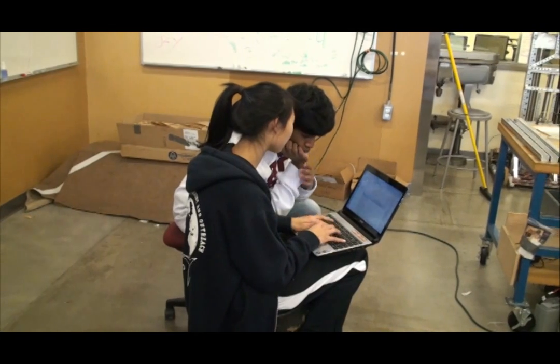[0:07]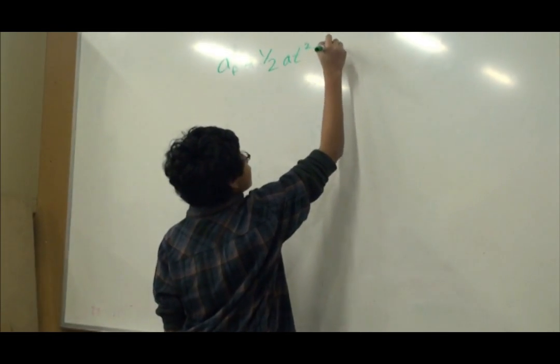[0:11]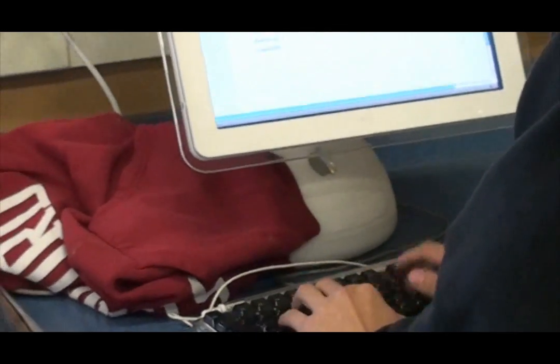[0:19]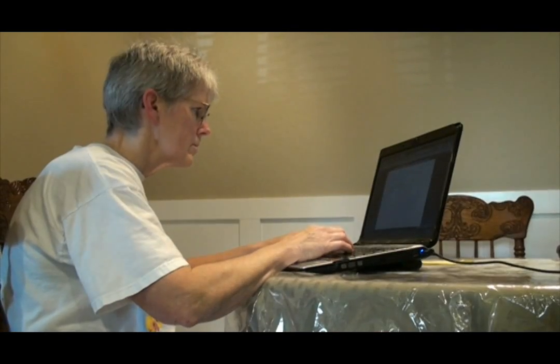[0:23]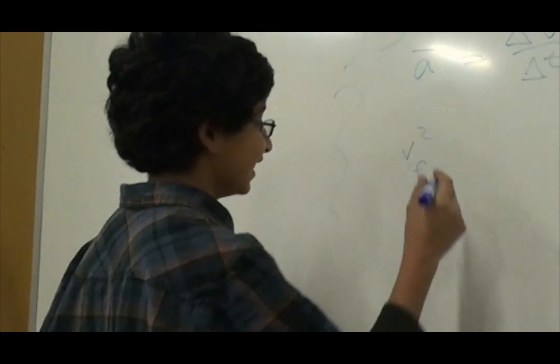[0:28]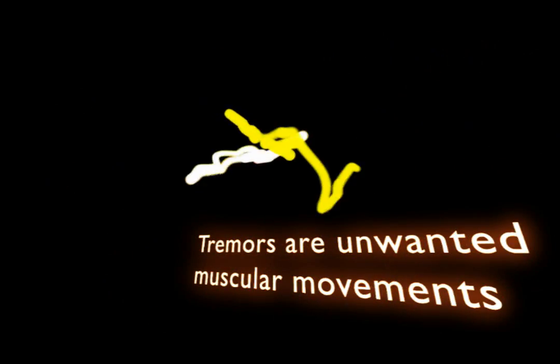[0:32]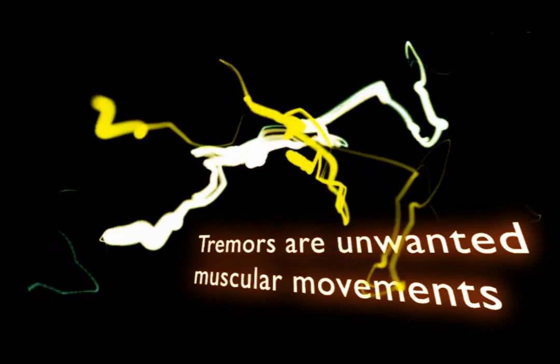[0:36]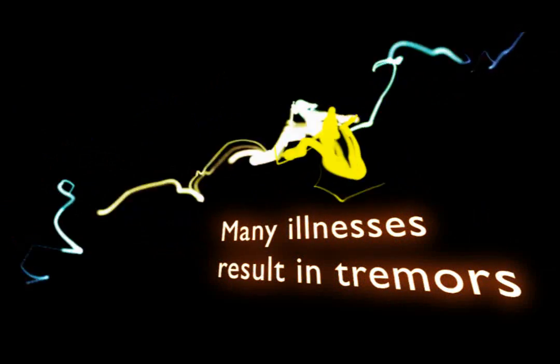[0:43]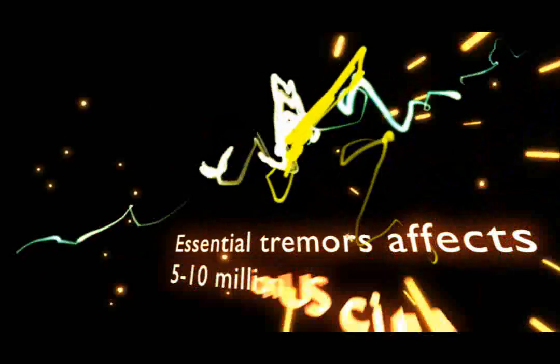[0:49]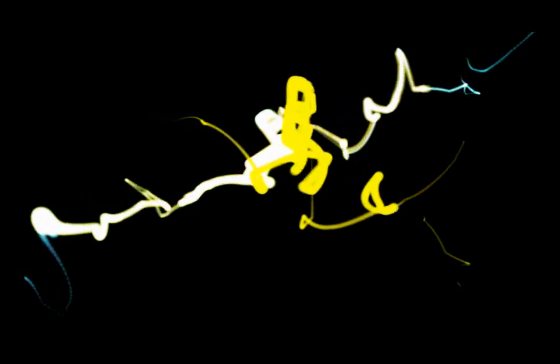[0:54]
A tremor is an unwanted movement or oscillation of one or more regions of the body attributed to neurological disorders or problems in the brain centers that control the movement of particular muscles. There are many illnesses that result in tremors, such as multiple sclerosis, Parkinson's disease, traumatic injury to the brain, and strokes. Essential tremor, which affects 5 to 10 million people in the U.S., is a progressive neurological disorder.
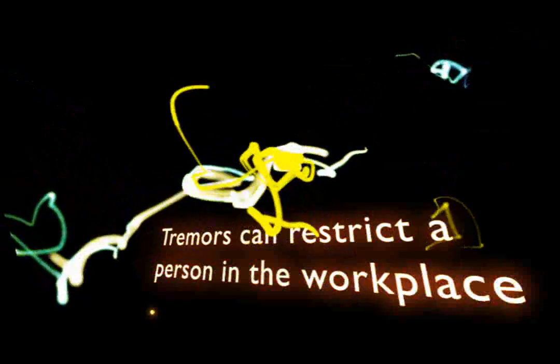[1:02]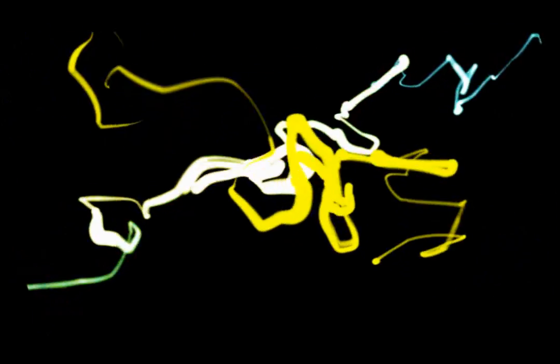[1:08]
Its most recognizable feature is a tremor of the arms, which is most apparent in voluntary movements, such as eating, writing, and typing. These actions are all necessary in an office environment. Tremors themselves aren't fatal, but can significantly restrict a person from doing the simplest of tasks in their workplace and in their daily lives.
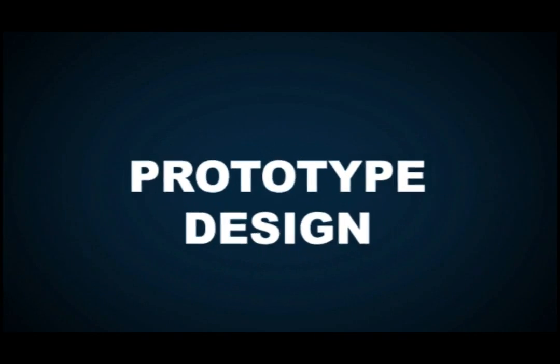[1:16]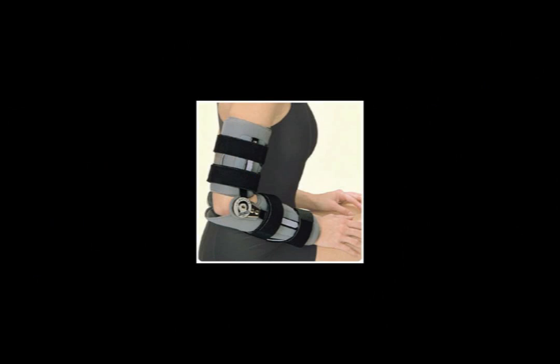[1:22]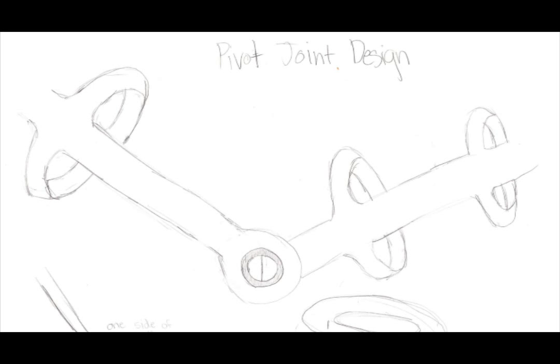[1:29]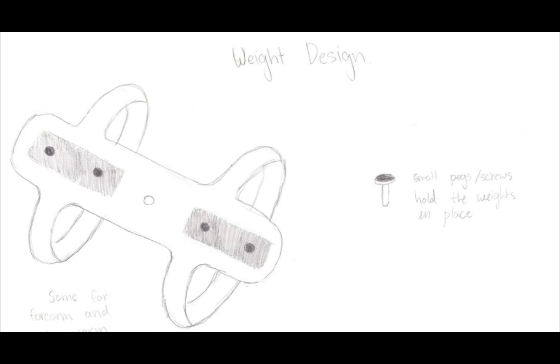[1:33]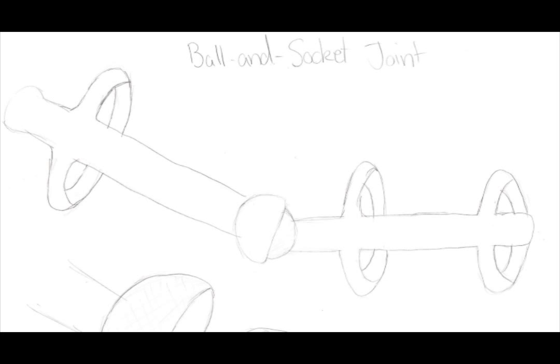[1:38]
To formulate a design for our device, we first researched the products already on the market and found many issues. Mainly, the current products severely limit movement and are too restrictive and cumbersome to prevent tremors. We sought to build an inexpensive device that would allow for adequate arm mobility and limit the effect of tremors by providing natural resistance to movement in order to stabilize the entire arm.
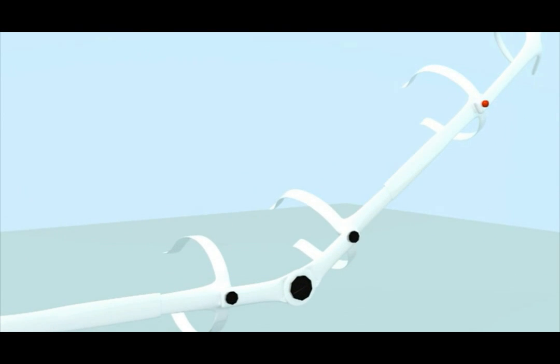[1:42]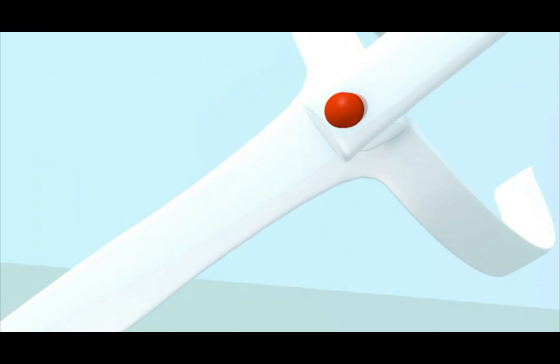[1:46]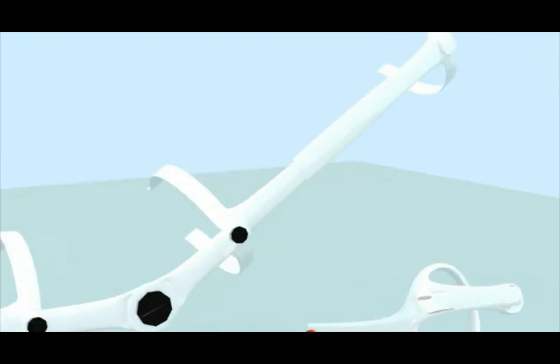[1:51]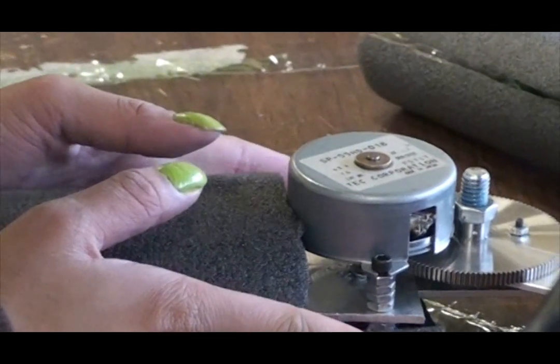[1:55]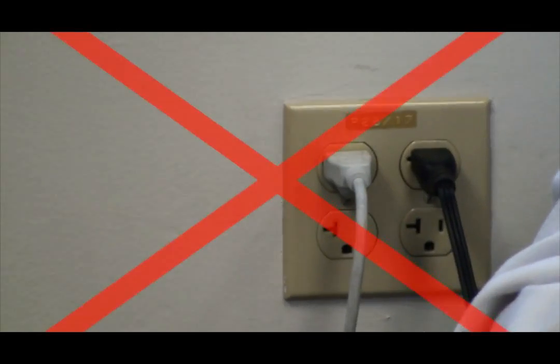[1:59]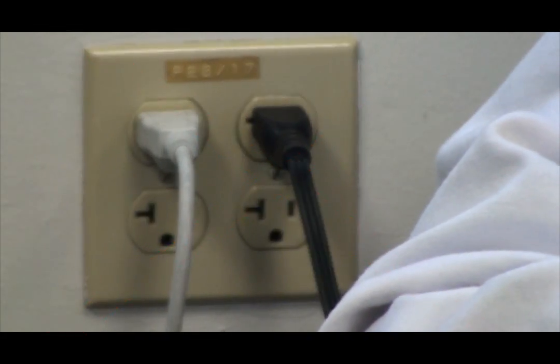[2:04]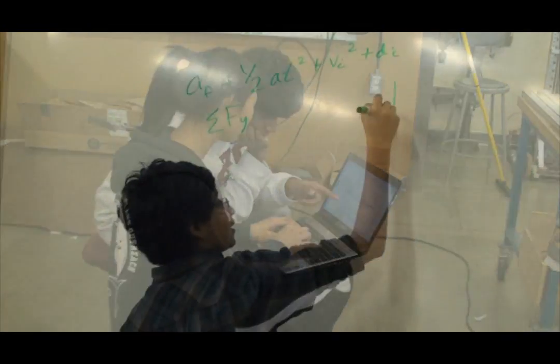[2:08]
Our final design features a back-driving motor attached at the elbow to provide a natural resistance. The motor rotates when the arm is in motion when accomplishing a certain task, such as typing or writing. The brace spans from the wrist to the shoulder. The entire device is foam padded for comfort and can be attached with the free hand using Velcro. The device requires no electricity, maximizing the usability and safety of the design. TRAB moderates the effects of tremors and significantly improves the user's ability to perform tasks that require fine motor control.
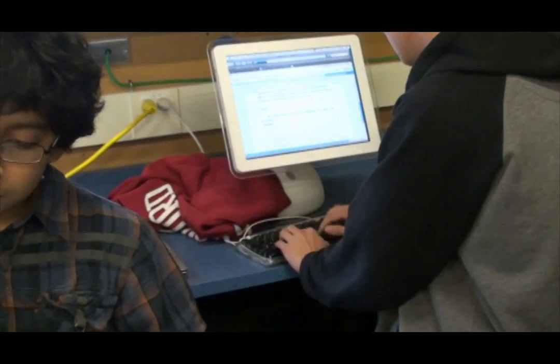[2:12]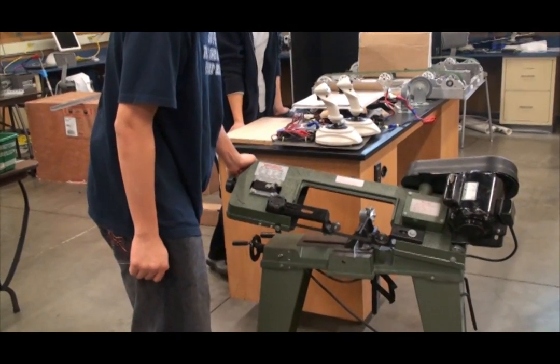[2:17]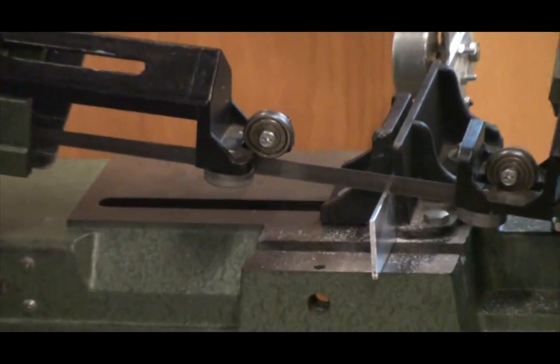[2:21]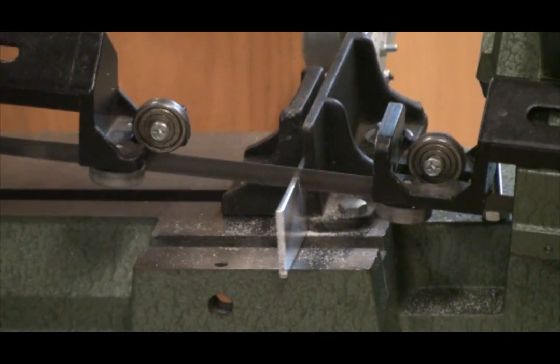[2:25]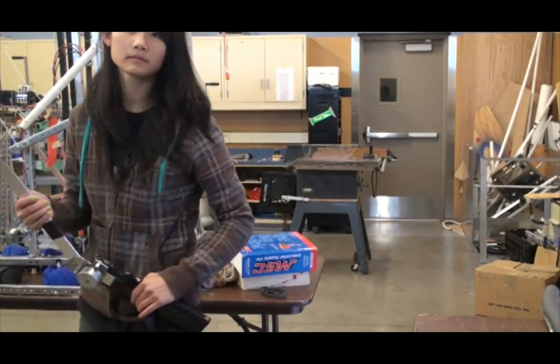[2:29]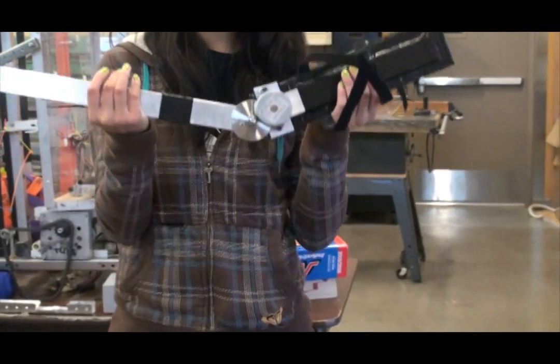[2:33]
The construction of our device was divided into 4 parts. To construct the arm brace, we first cut the aluminum strips into 2 sections. One of the sections was used for the upper arm, and the other part was used for the forearm. We connected the 2 parts via a step motor and 2 gears. We used screws and bolts in order to attach the step motor and gears to the 2 separate pieces of aluminum. This formed the basic skeleton of the device.
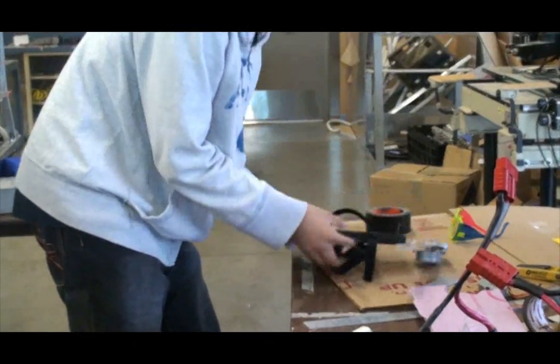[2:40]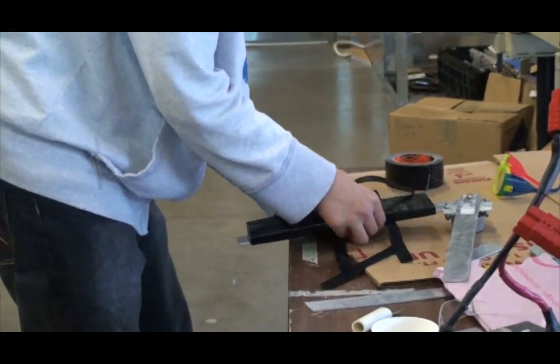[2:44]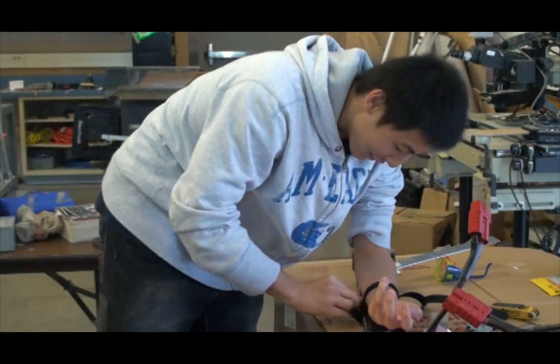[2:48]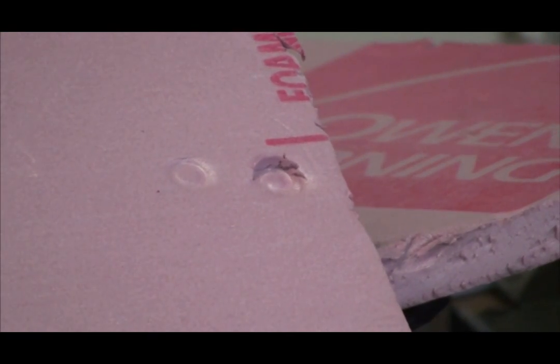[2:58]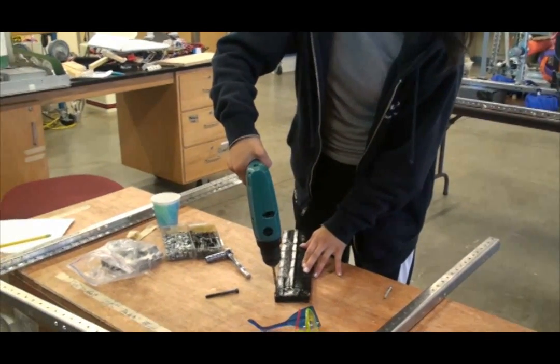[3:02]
Then, Velcro was attached onto both the upper and lower arm. This allowed the braces to be attached to the person's arm. The Velcro was attached with adhesive material and was adjustable in order to provide the greatest amount of comfort. A set of pads was attached to each piece of aluminum in both the upper and lower parts of the brace via screws as well as adhesive material to provide comfort as well as stability to the arm.
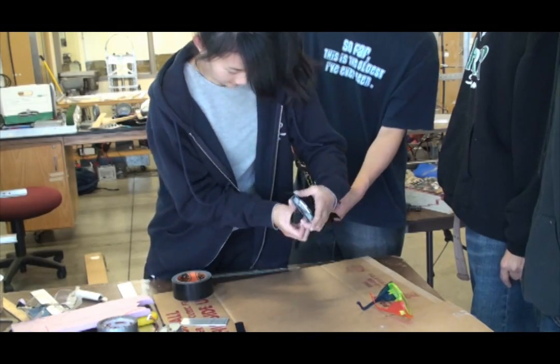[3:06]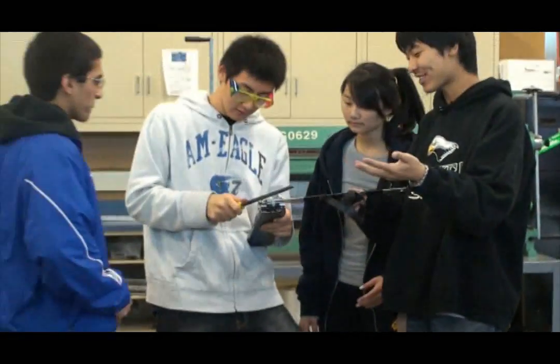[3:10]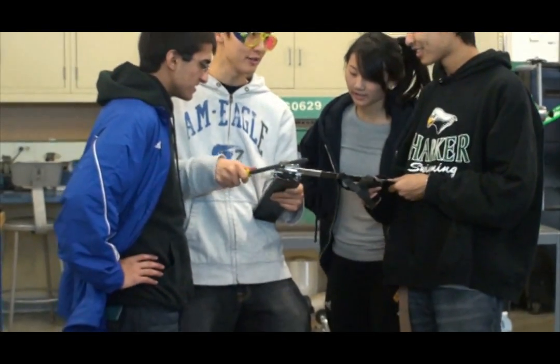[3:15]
Finally, the arms of aluminum and the step motor were adjusted so the right amount of resistance was provided. The bolts were loosened slightly in order to allow for the device to rotate successfully. This was the final step in the construction of the device.
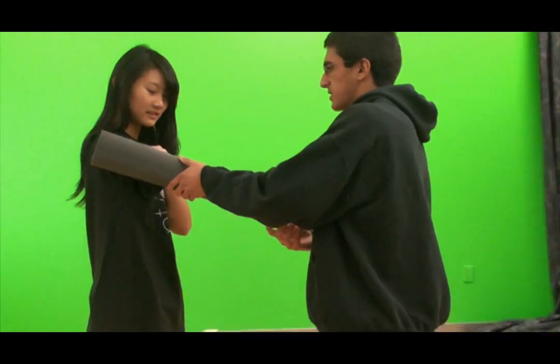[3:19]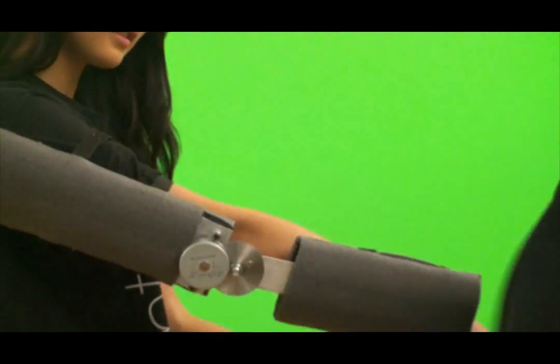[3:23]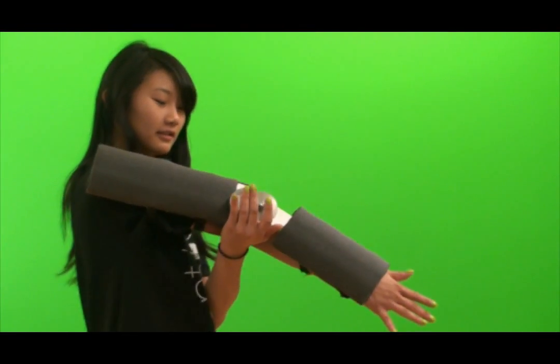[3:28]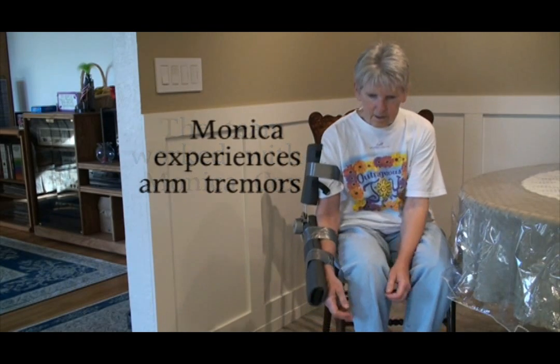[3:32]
To ensure the functionality of our device, we performed various tests. First, we tested the comfort and usability of the device by trying it on various team members. The device moved with ease and provided ample resistance to movement. It was easily adaptable to members with different arm sizes and muscle power.
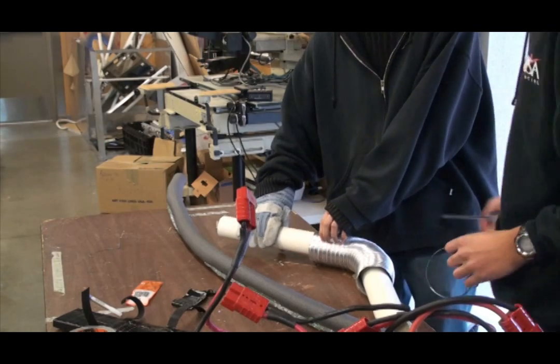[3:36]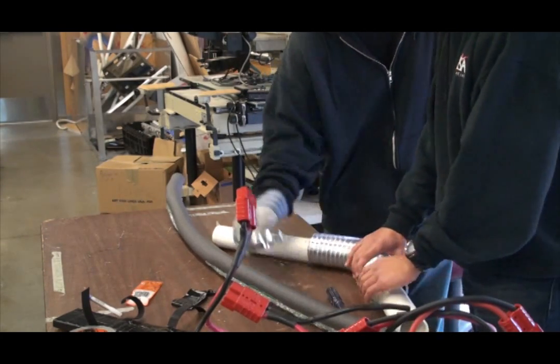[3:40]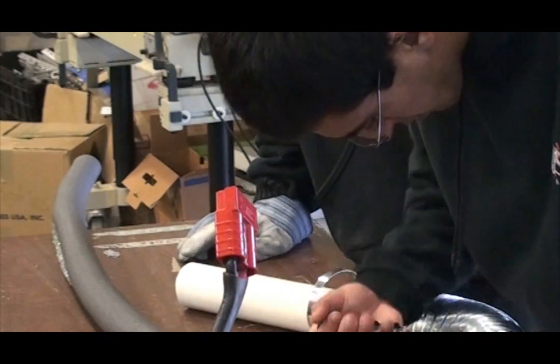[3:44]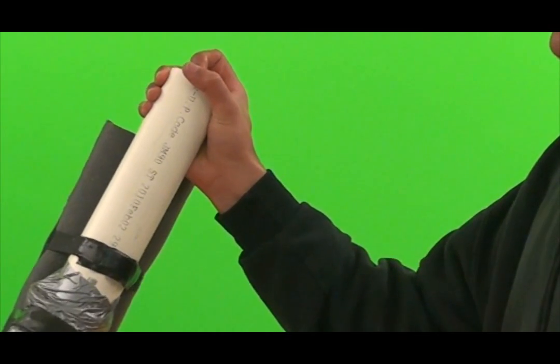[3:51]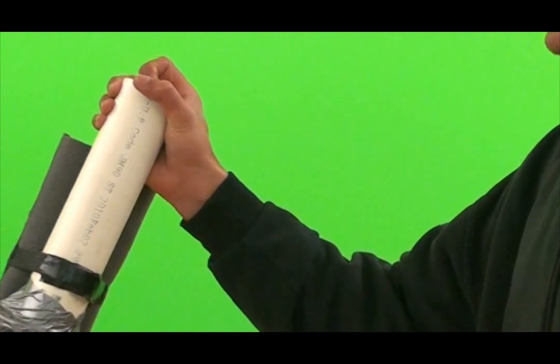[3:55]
The second test sought to determine whether the device limited the effect of unwanted arm movement in an objective arm model. To ensure precise and systematic testing, an arm was constructed out of aluminum tubing and PVC piping. We attached the device to the makeshift arm and systematically oscillated the upper and lower parts of the arm to simulate tremors. The resistance of the brace was measured using video analysis.
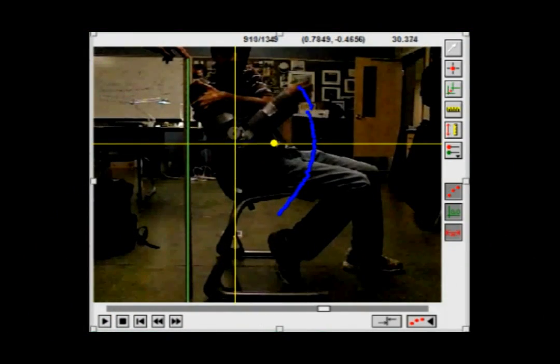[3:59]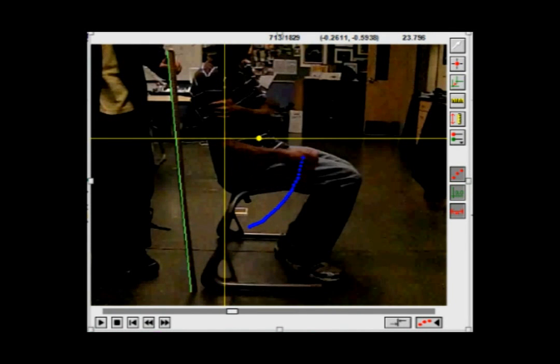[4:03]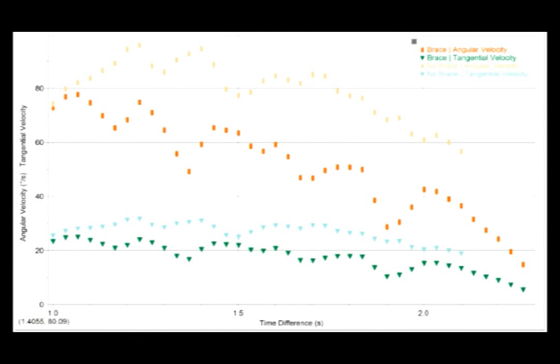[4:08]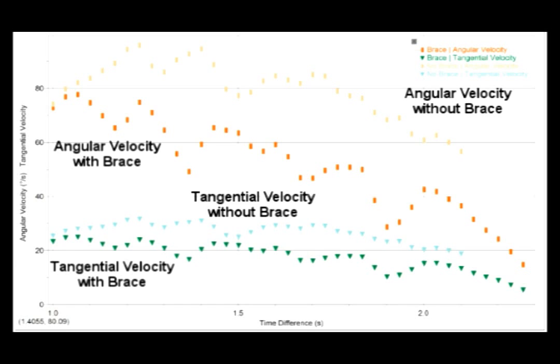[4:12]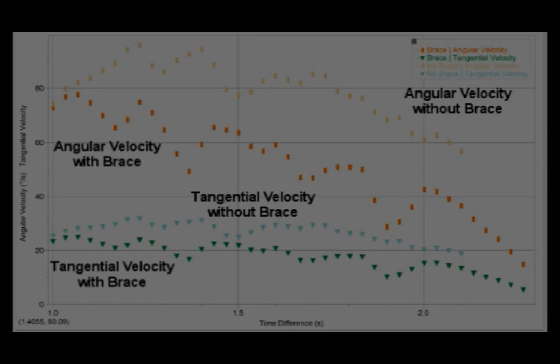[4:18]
A test subject rotated his arm from the elbow joint as quickly as possible with and without the brace on. A high-speed camera was used to capture the details of this motion. As shown, the angular and tangential velocities of the arm with the brace on are clearly lower than without the brace. This shows that the resistance provided by the brace is significant in reducing the rotational motion of the arm, making the brace suitable for minimizing involuntary tremors.
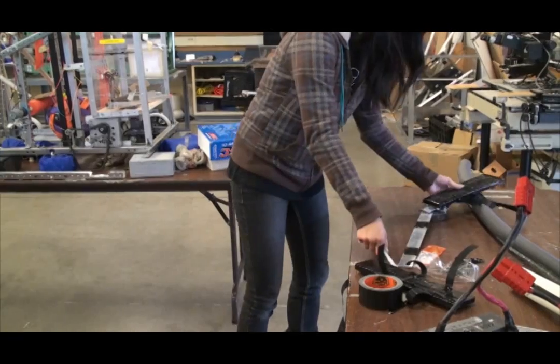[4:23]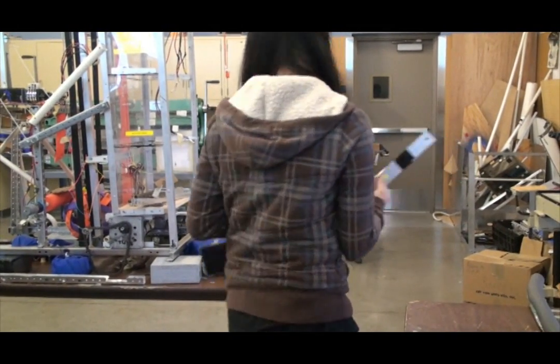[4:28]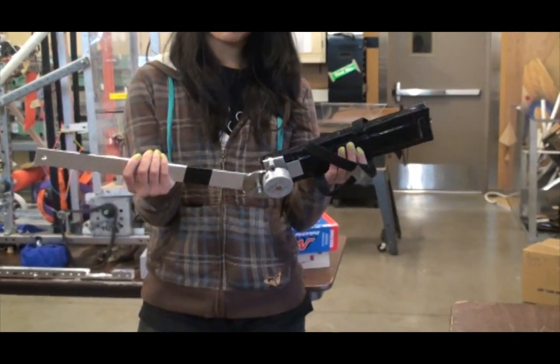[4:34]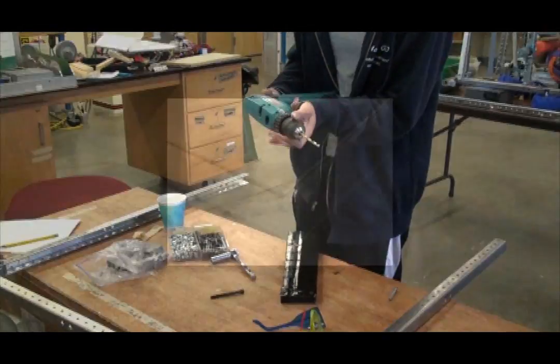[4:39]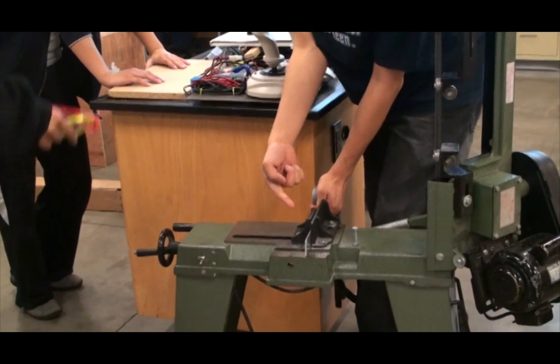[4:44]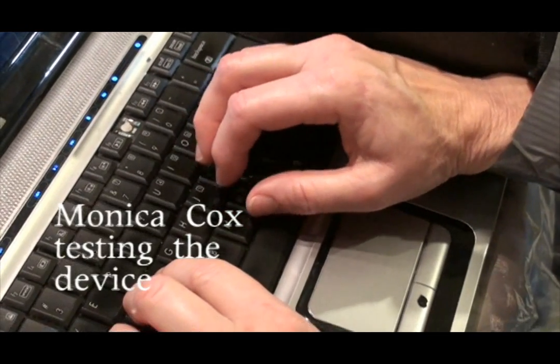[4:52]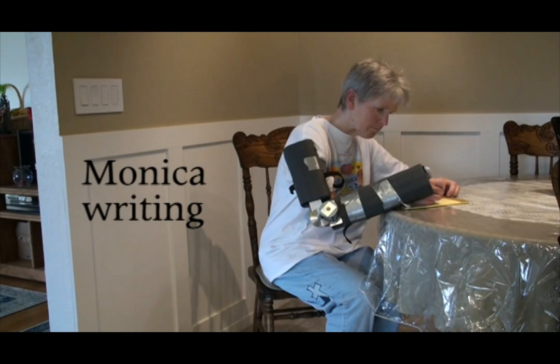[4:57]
The motor operates without electricity, thereby decreasing costs and avoiding the potential risk of circuitry. Cushions as well as Velcro strips were attached along the length of the device to ensure comfort and stability. TRAB features a relatively simple design. Only a few materials were used to construct the device: aluminum sheet metal, gears, motors, Velcro, and cushions. The malleability of aluminum means that the device is adaptable to arms of different shapes and sizes. TRAB can be implemented on a large scale quite easily. Such a device can be used for everyday tasks, from using a computer to cooking in the kitchen.
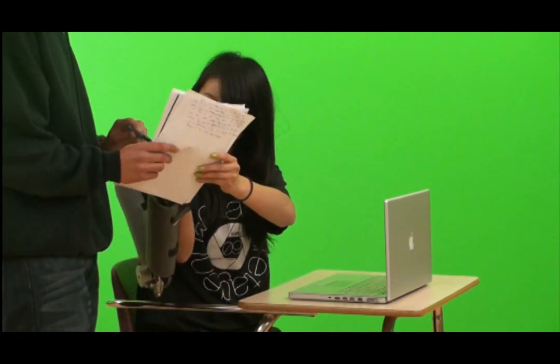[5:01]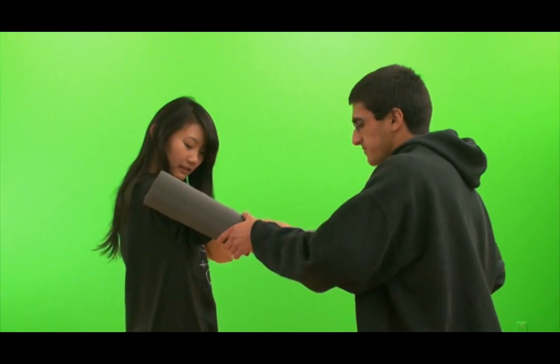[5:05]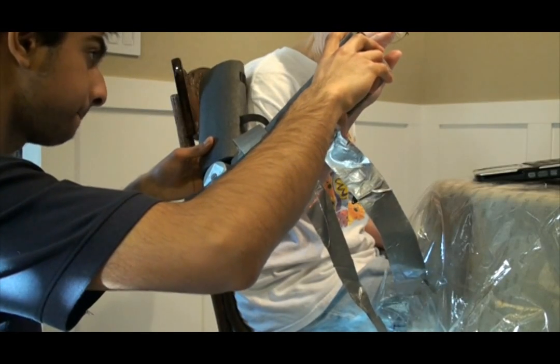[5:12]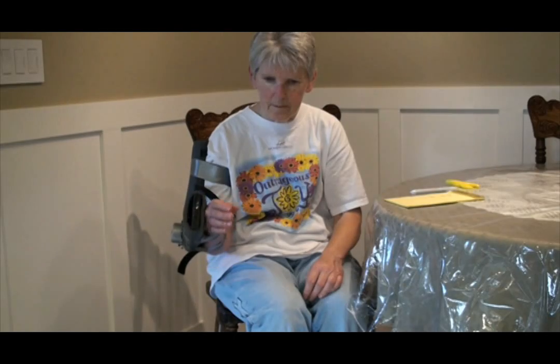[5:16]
Current products on the market are inadequate. There are some braces which severely limit arm movement and others which are simply ineffective against essential tremors. TRAB solves these problems by allowing for adequate arm mobility, while variable resistance, not static resistance, is produced by the back-driven motor, allowing the device to be more effective against tremors.
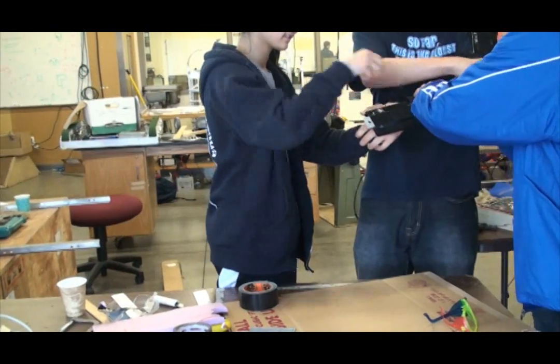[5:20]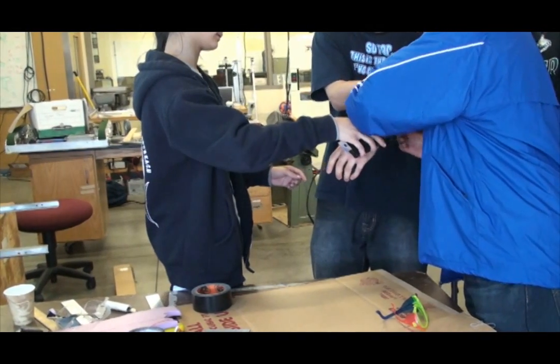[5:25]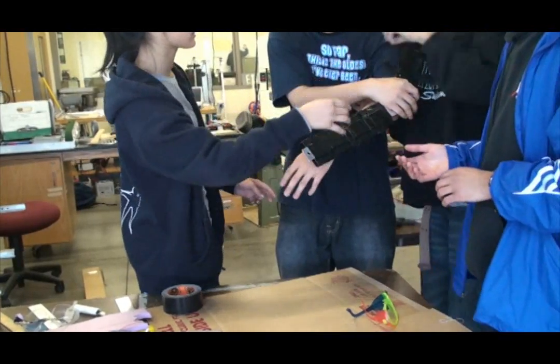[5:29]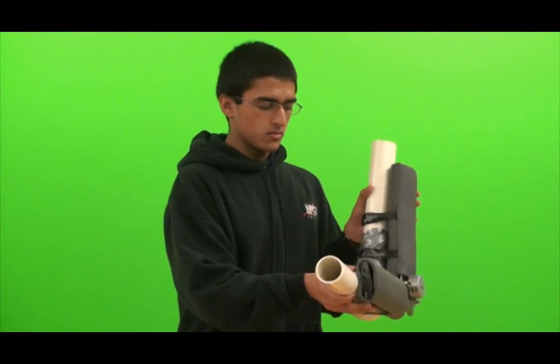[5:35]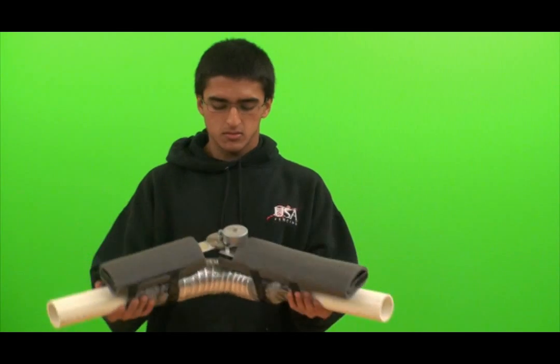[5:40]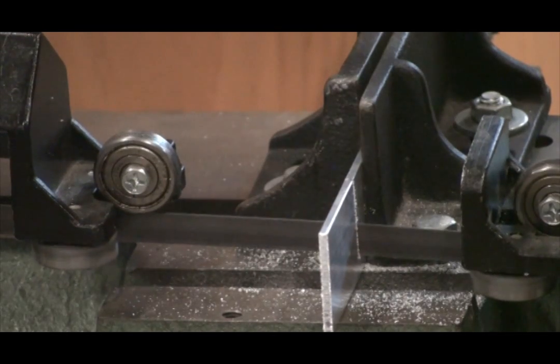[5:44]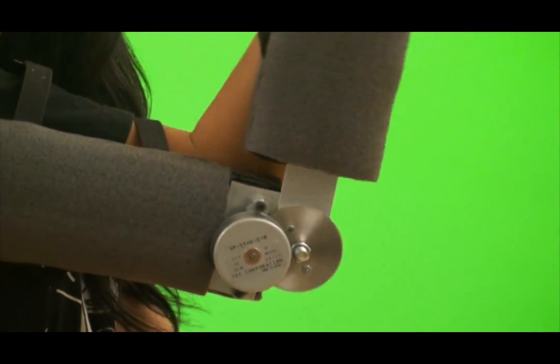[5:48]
The attachment of the device onto the arm is highly universal. Velcro is one of the easiest, cheapest, most universal materials to work with. Also, a tremor patient would not have difficulty with Velcro because it is secure but not stiff enough to require a lot of force. The device is also light and durable because aluminum is a lighter metal, but many different metals can be used in replacement, such as plastic. These main structural elements can also be cut to different lengths to accommodate different people. The central bolt in the design can be tightened or loosened to provide varying levels of resistance to the user.